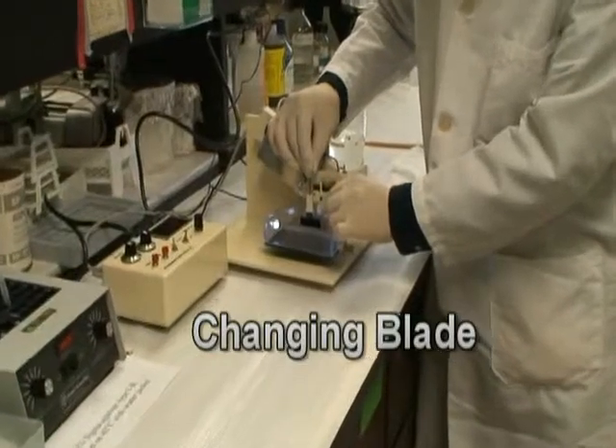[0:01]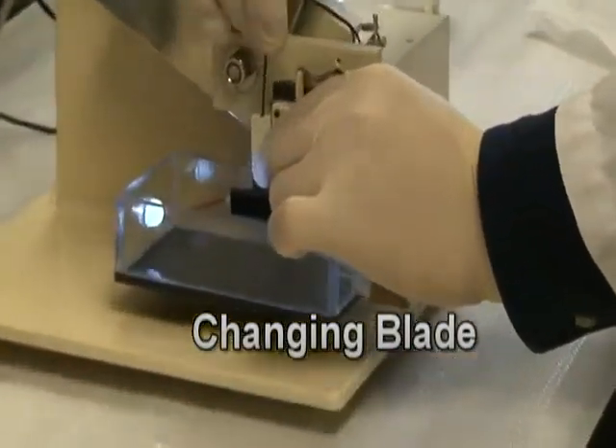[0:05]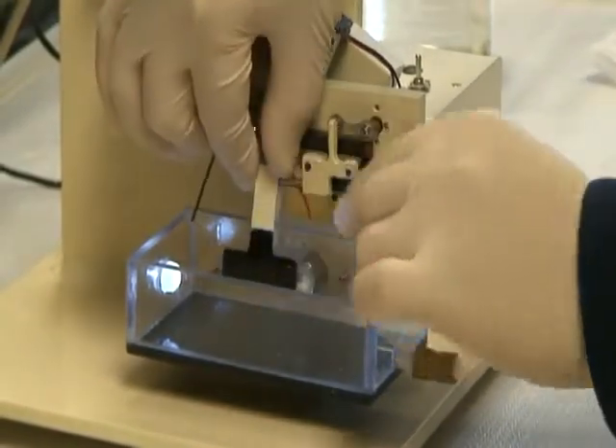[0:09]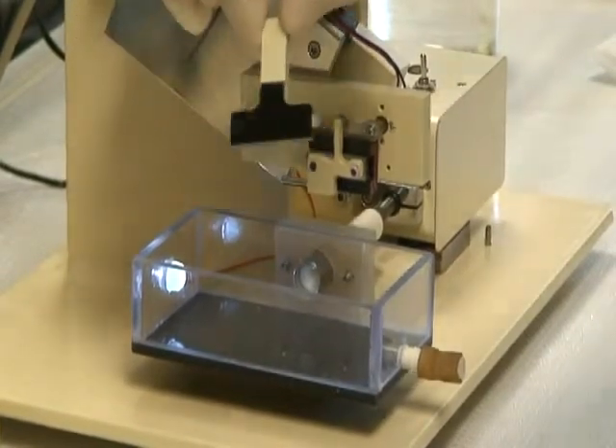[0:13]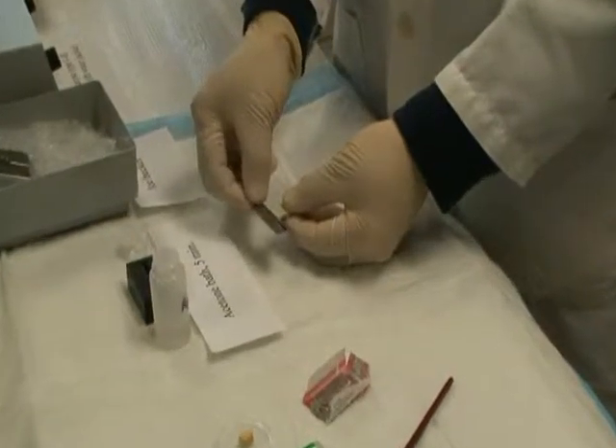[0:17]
Changing blade. Unscrew the blade holder. Peel off the old razor blade.
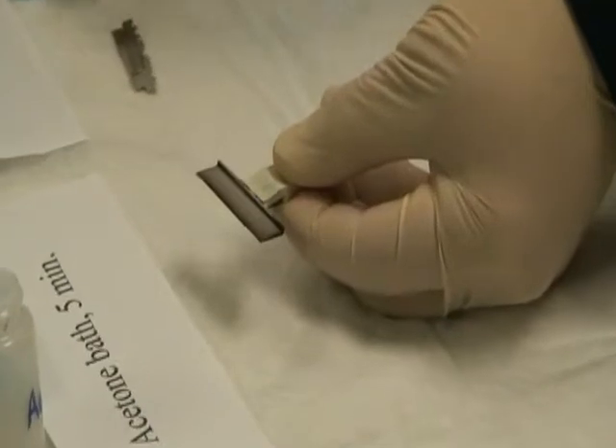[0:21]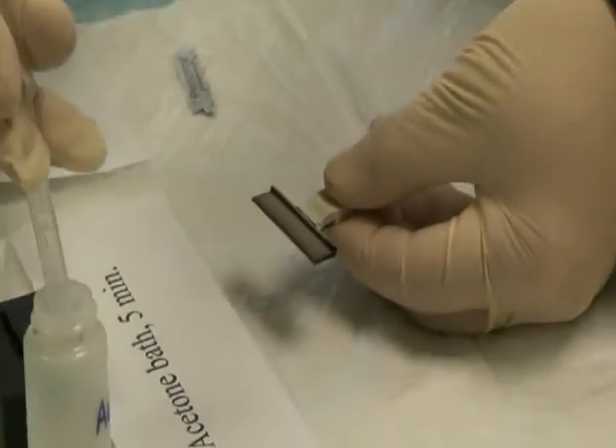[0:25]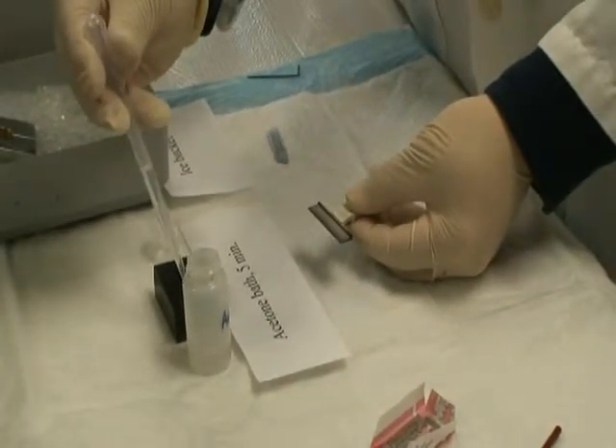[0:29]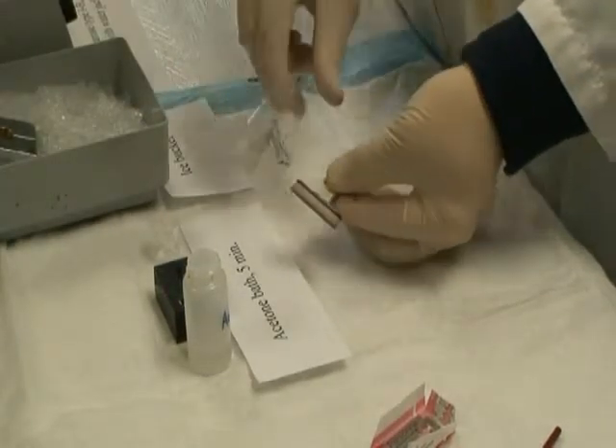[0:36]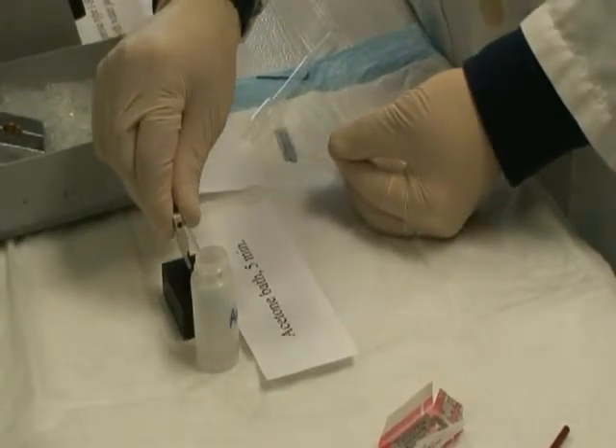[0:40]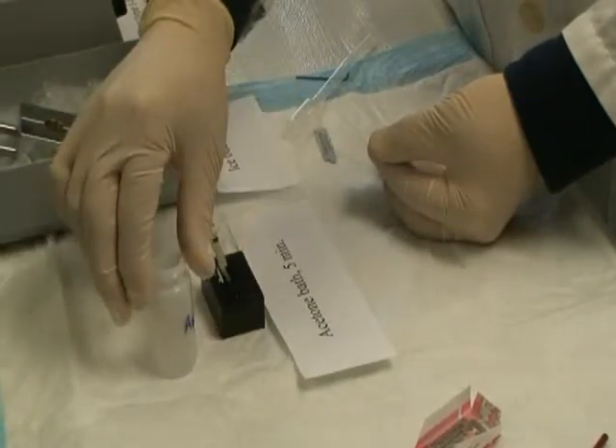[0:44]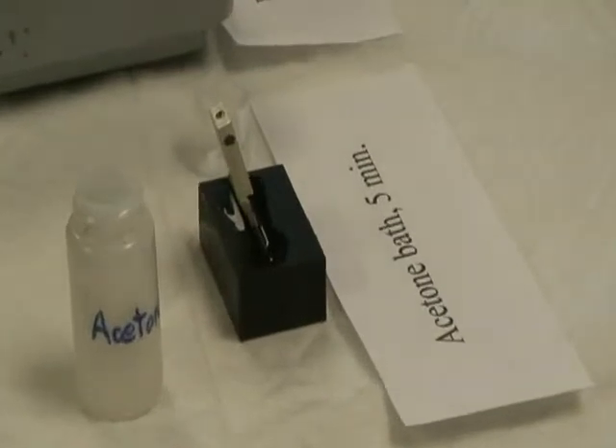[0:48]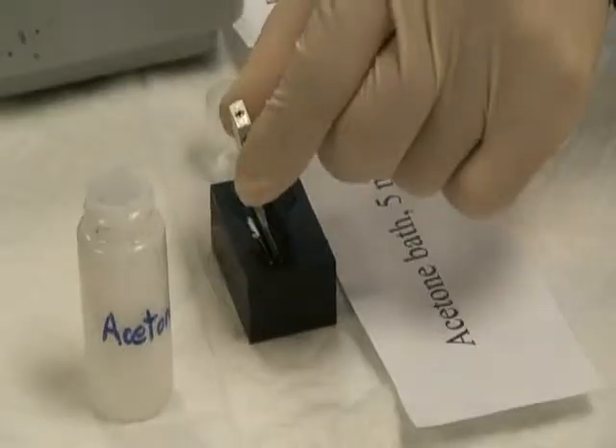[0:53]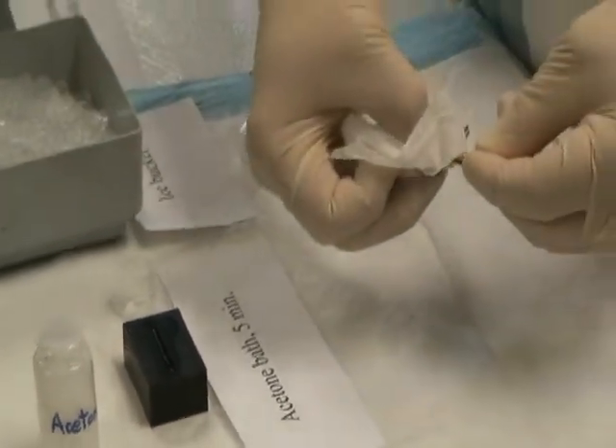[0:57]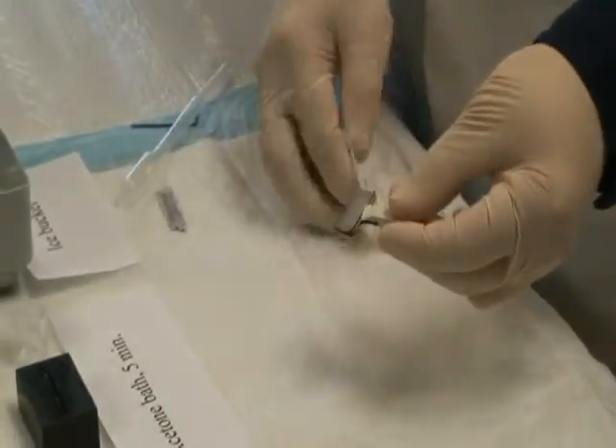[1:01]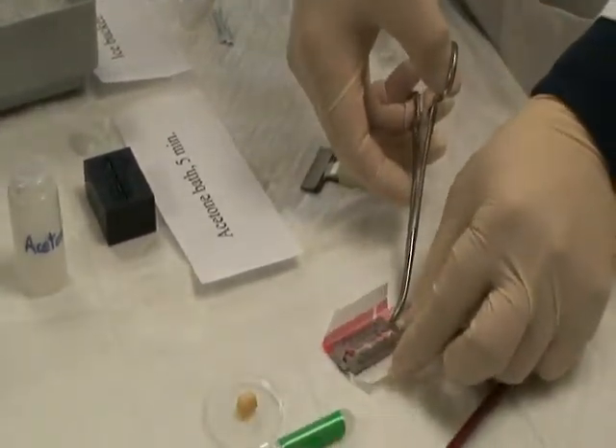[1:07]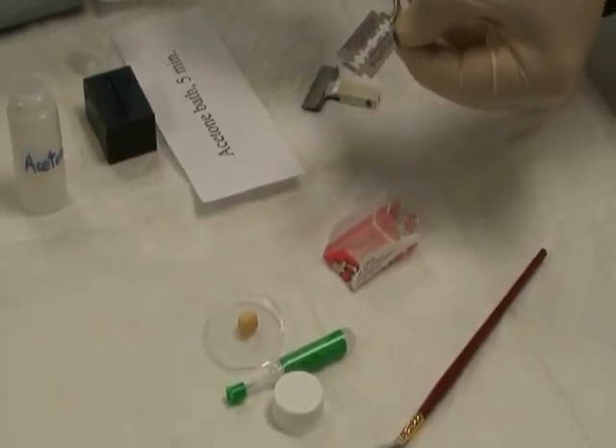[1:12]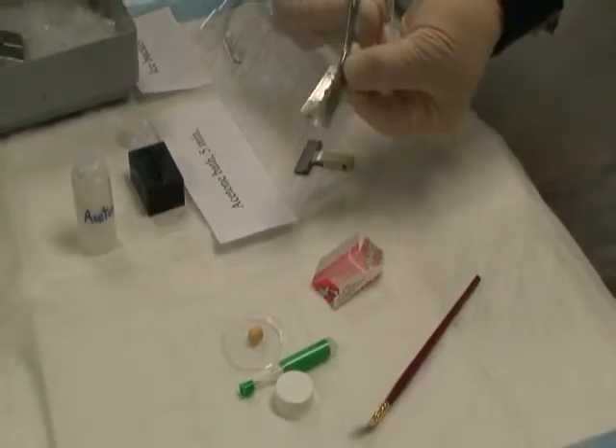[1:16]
Pipette 0.5 milliliters acetone to the acetone bath. Dip the blade holder into the acetone bath for 5 minutes. Clean up the glue residual with a tissue paper. Break the razor blade in half on its roots.
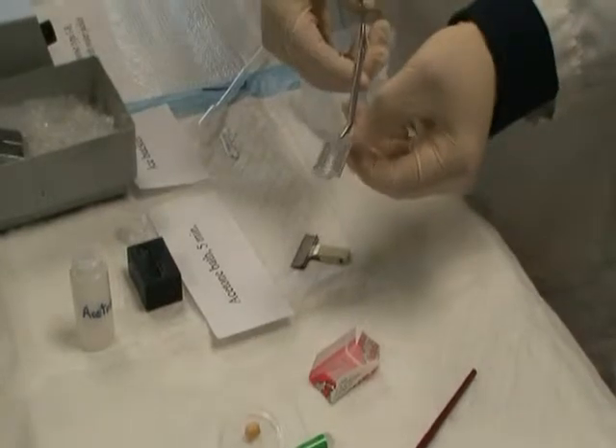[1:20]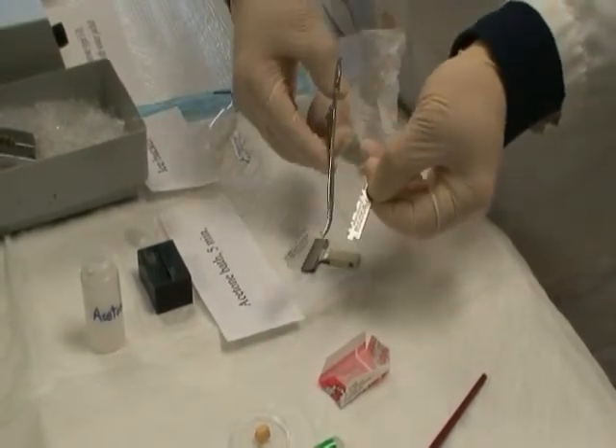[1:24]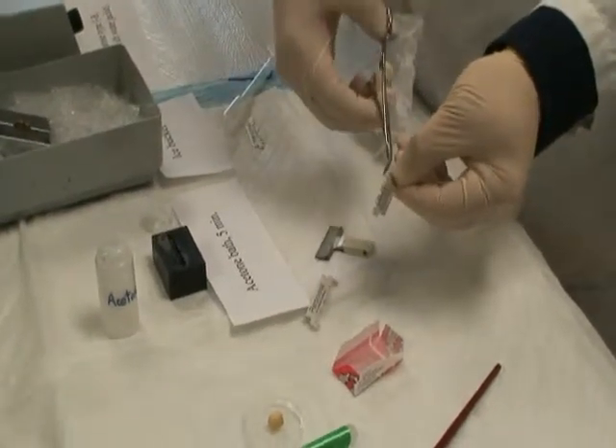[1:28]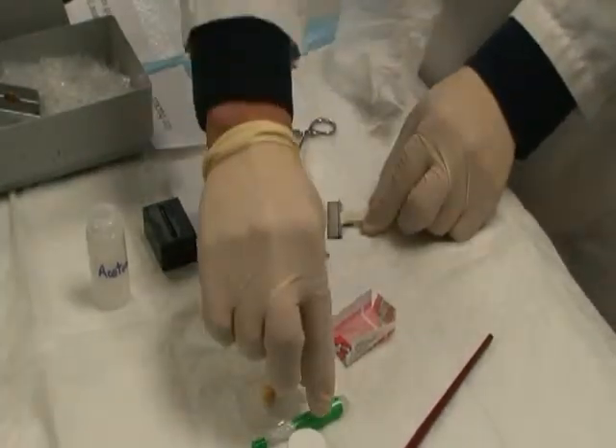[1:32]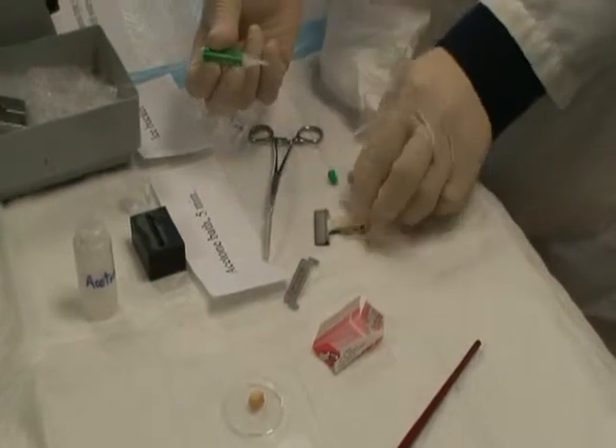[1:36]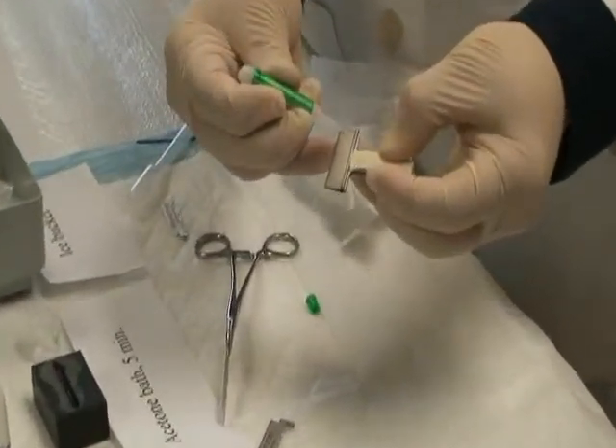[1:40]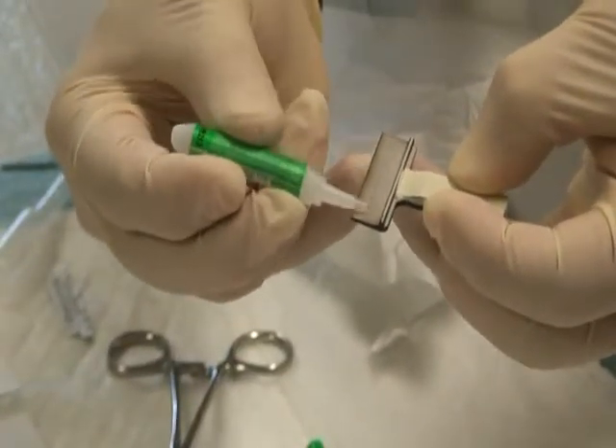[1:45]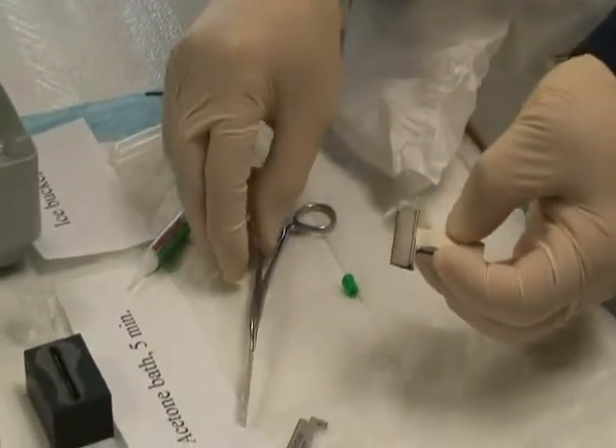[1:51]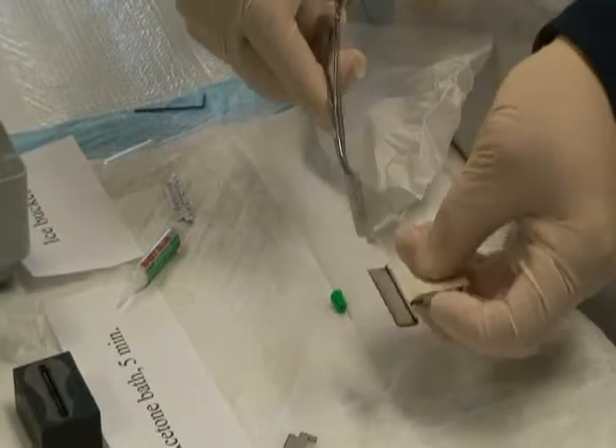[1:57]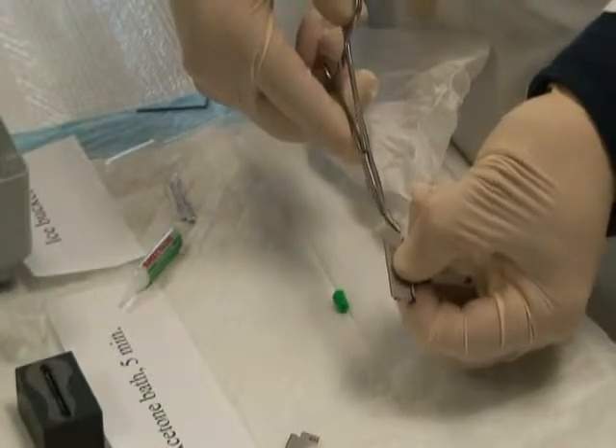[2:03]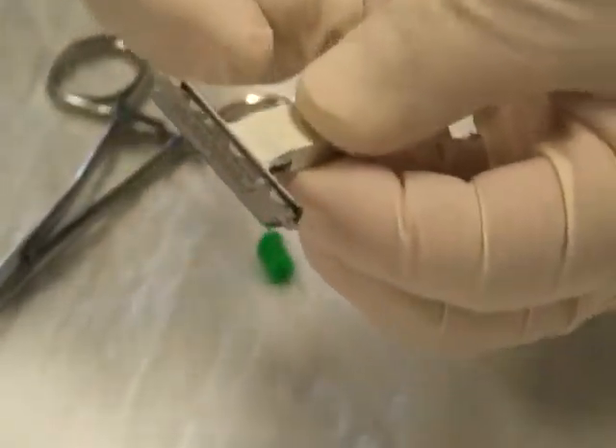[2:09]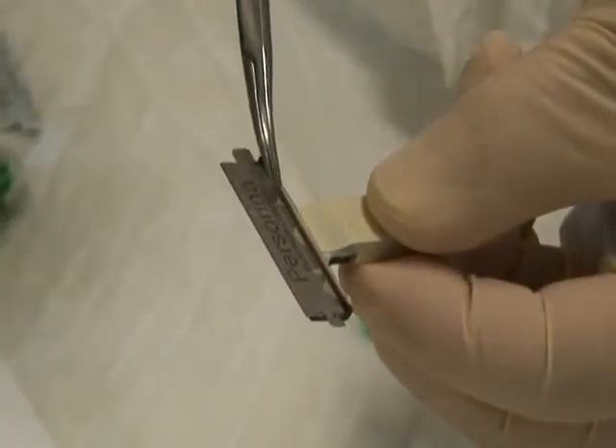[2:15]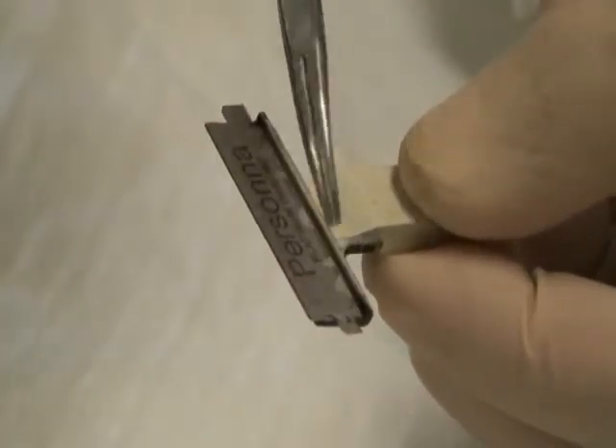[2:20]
Apply crazy glue on the outer one-third edge of the blade holder. Glue the blade to the blade holder. The back of the blade should attach to the rib of the blade holder. Both broken ends should tilt up.
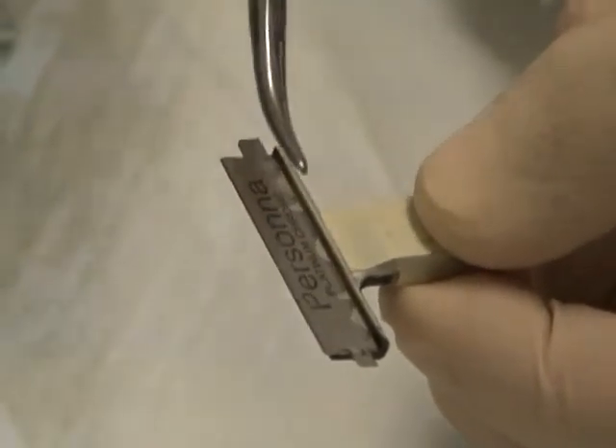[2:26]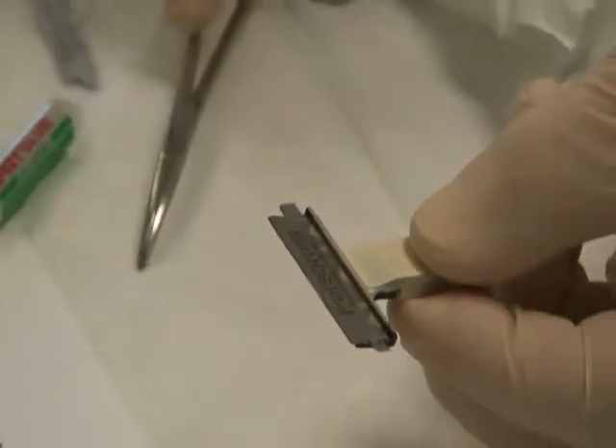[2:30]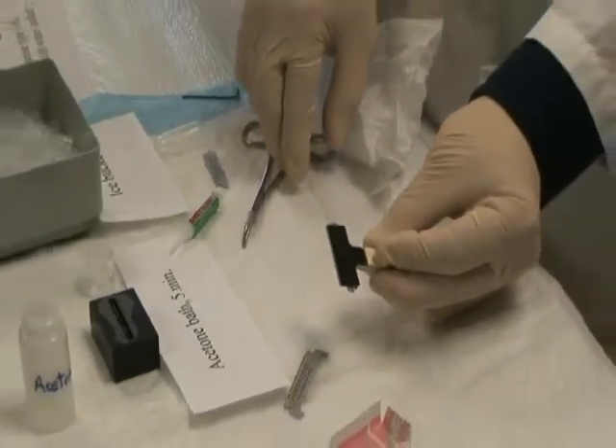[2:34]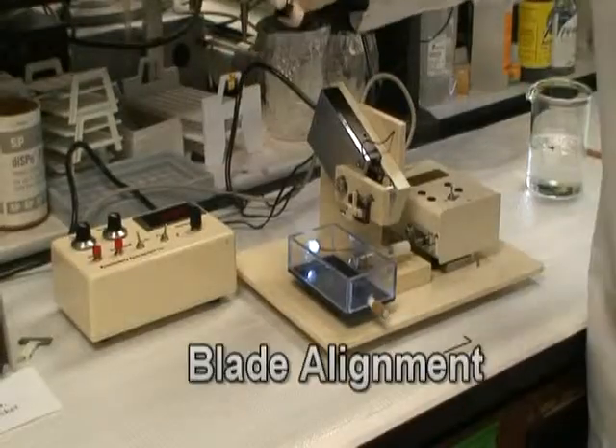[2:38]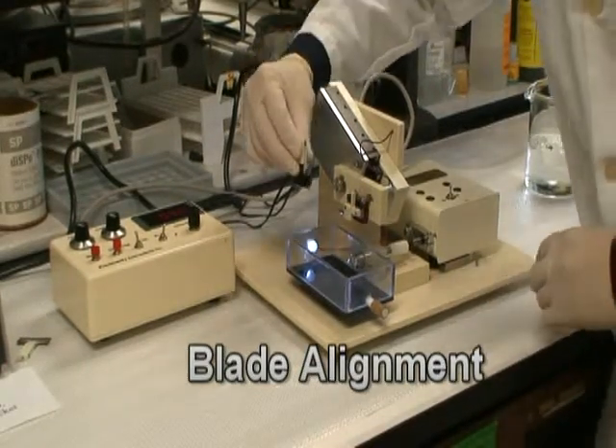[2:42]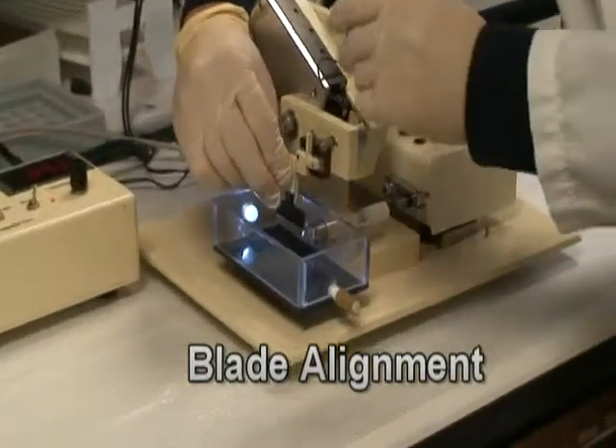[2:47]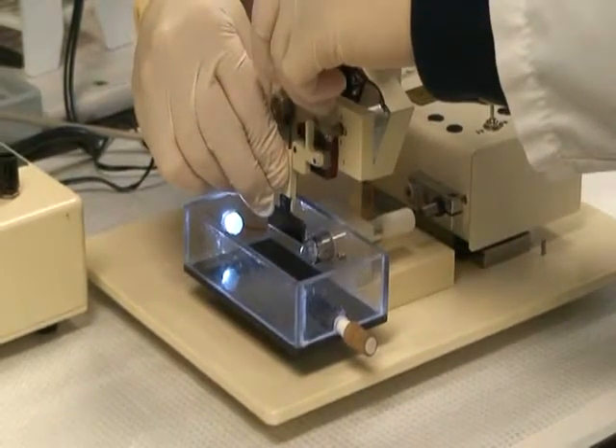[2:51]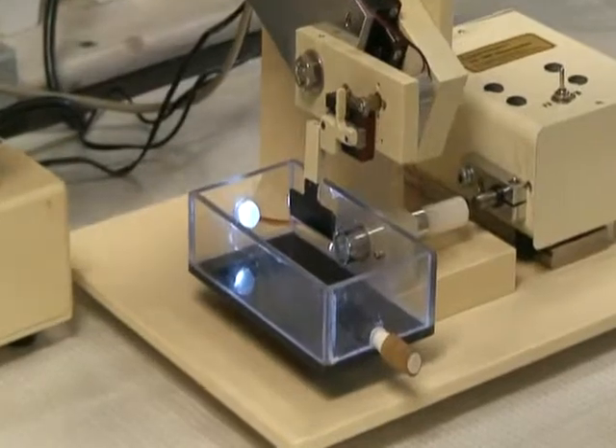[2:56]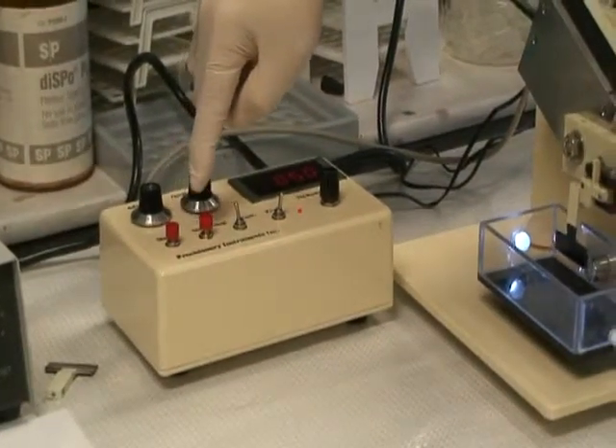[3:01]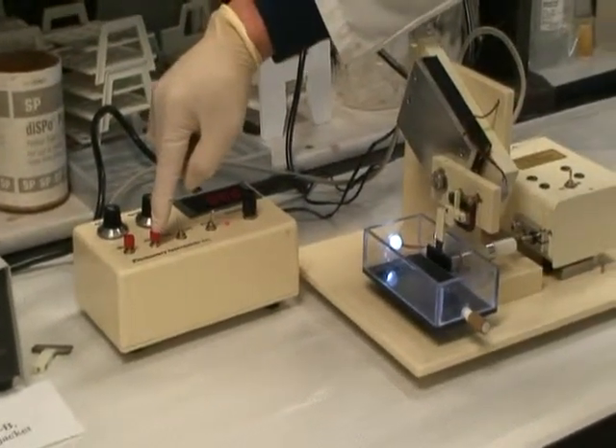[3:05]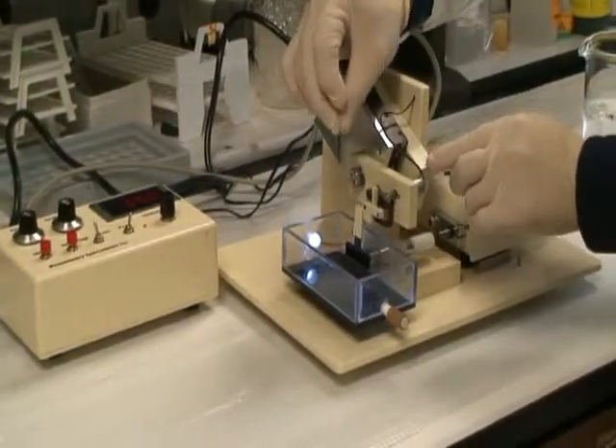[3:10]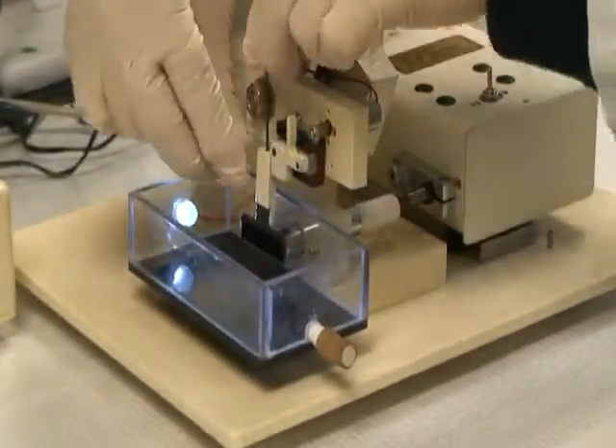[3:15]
Blade alignment. Put the blade holder back onto the machine. Press the start button. Press the stop button. Tilt the blade holder toward the specimen syringe and leave a small gap between them.